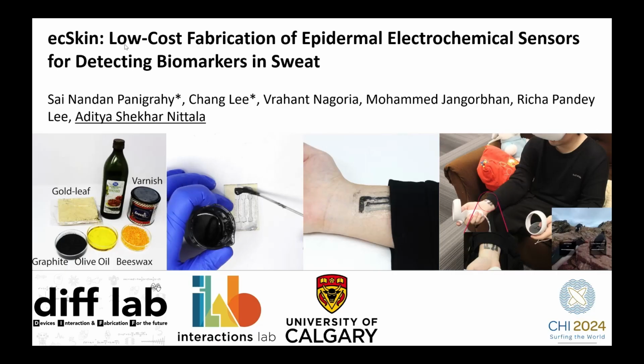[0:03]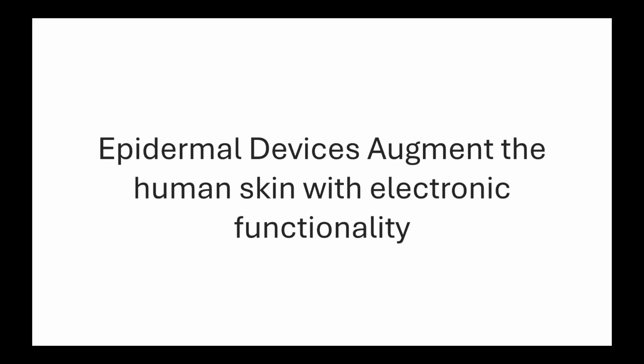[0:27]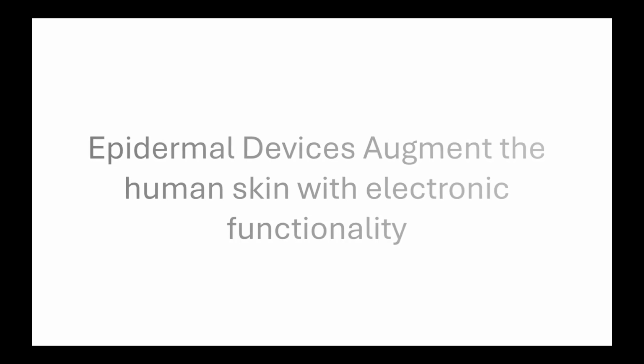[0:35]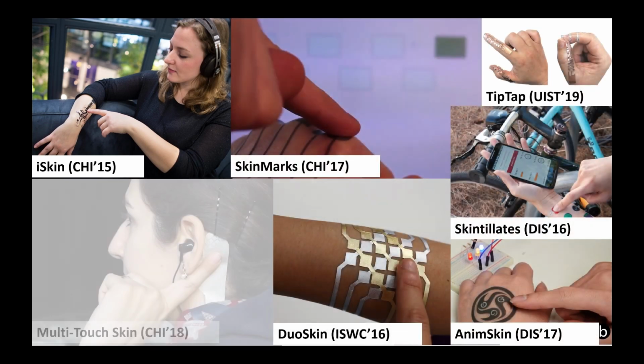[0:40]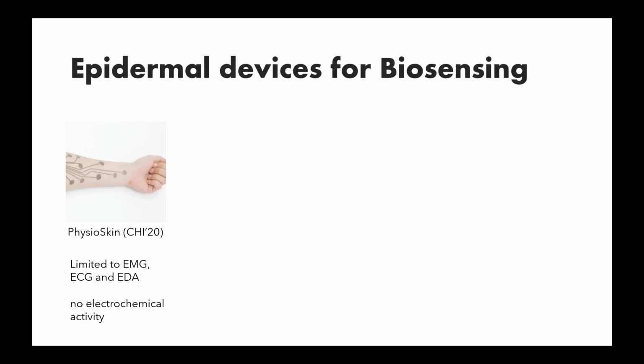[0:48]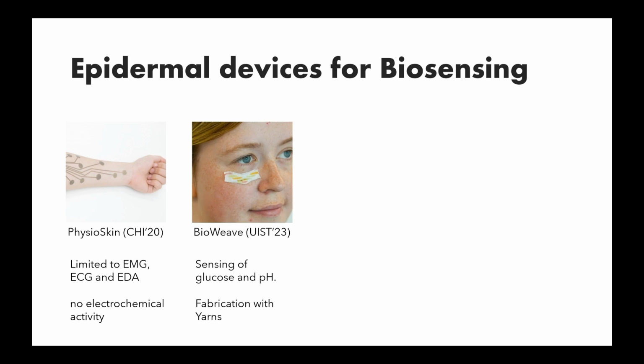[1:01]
Epidermal devices, often referred to as electronic skin or epidermal electronic systems, open up a wide range of possibilities by augmenting the human skin with electronic functionality. Recent research in HCI has explored the design and development of epidermal devices for sensing tactile input, delivering haptic input, and augmenting the body with visual displays. More recently, the HCI community has contributed to epidermal devices that can capture physiological signals from the human body. Capturing these signals offers several benefits in terms of non-invasive health monitoring.
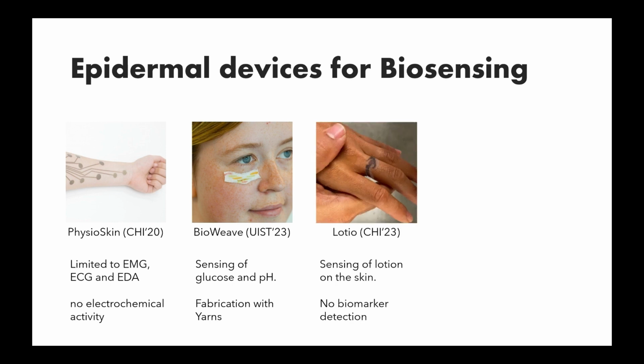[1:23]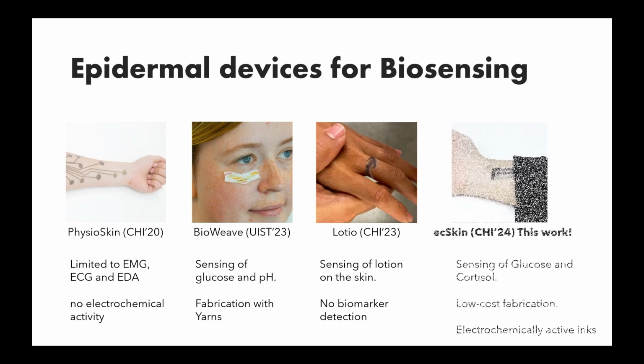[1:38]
However, most of the work in human-computer interaction is limited to electrophysiological sensing and not electrochemical sensing. So beyond the digital sensing of human physiology, there are biochemical markers, which are molecules in human fluids, which can reveal insights into human health at the molecular level, which can be used for personalized medicine. The use of chemical processes for designing novel interactions is gaining recent attention in human-computer interaction. These include supercapacitors that are fabricated using sustainable materials and wearable patches that can show exposure to UV light through changes in color. Despite this, we are yet to see the fabrication of electrochemical epidermal devices created from off-the-shelf materials that can react with human sweat and detect biomarkers non-invasively.
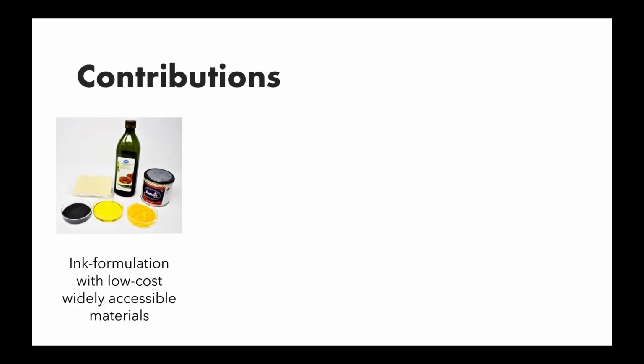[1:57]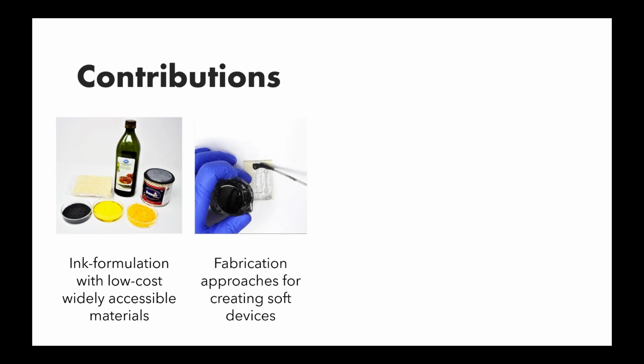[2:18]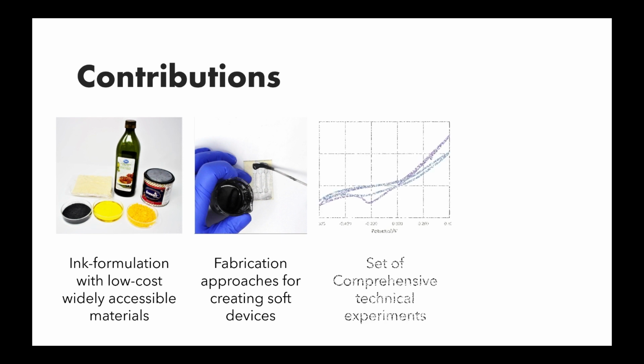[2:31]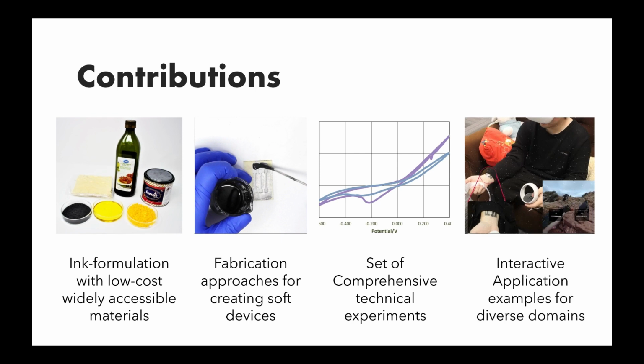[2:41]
So what are our contributions in this direction? With commercially sourced off-the-shelf available materials, we present the synthesis of inks that are not only highly electrically conductive, but also electrochemically active. The inks formulated through our process outperform commercially available carbon-based inks, and the state-of-the-art conductive pastes contributed in previous HCI literature. We also present fabrication strategies for realizing these electrochemical sensors on multiple substrate materials. These techniques are also low cost and can be easily deployed in a makerspace setting. Next, we comprehensively evaluated our sensors through a series of technical experiments to measure electrochemical capability and electrical conductivity. Finally, we demonstrate application scenarios to showcase the potential of ecSkin for various interactive applications.
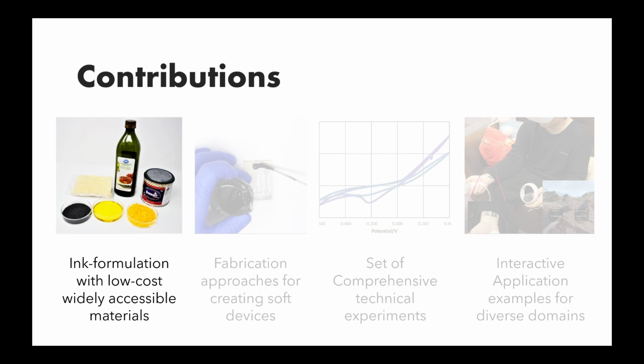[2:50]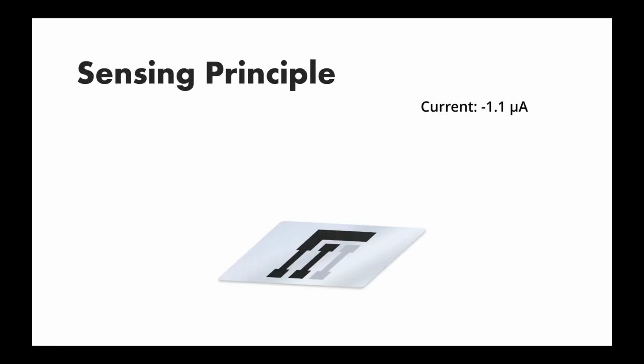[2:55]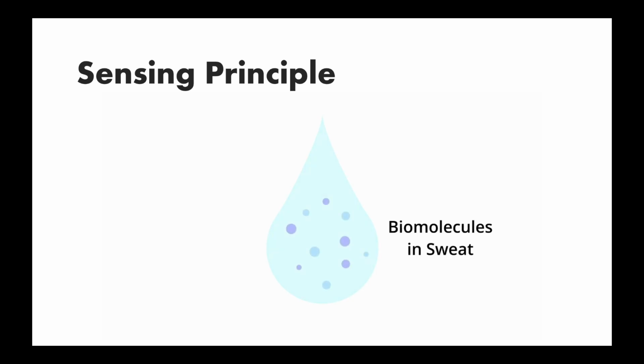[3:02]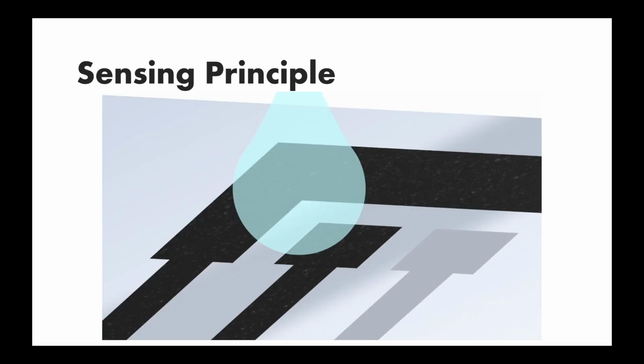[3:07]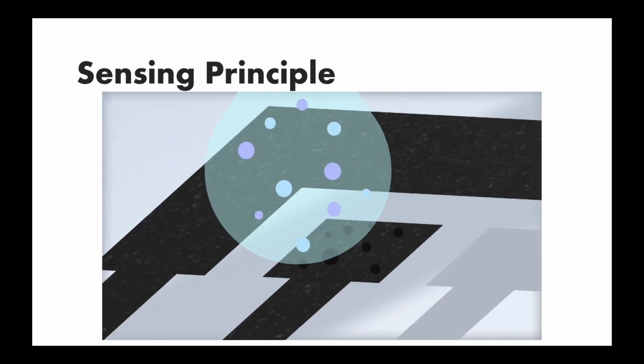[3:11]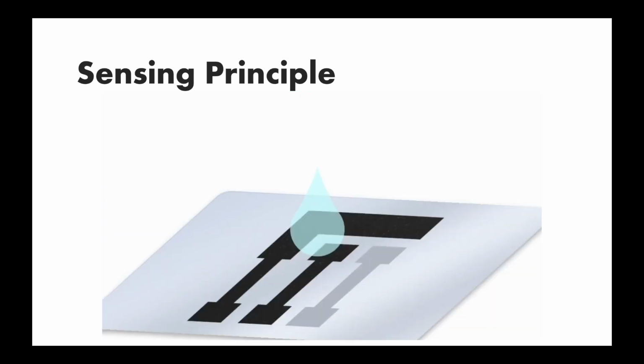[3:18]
So firstly, let us try to understand how the inks were made. And for that, it is crucial that we understand the sensing principle. When an analyte molecule, or a biomarker in our case, lands on the surface of a working electrode, it reacts with the electrode material, which results in the electron transfer between the two. This is often referred to as a redox reaction. The prime purpose of this working electrode is to convert this chemical reaction into a current signal by capturing the released electrons.
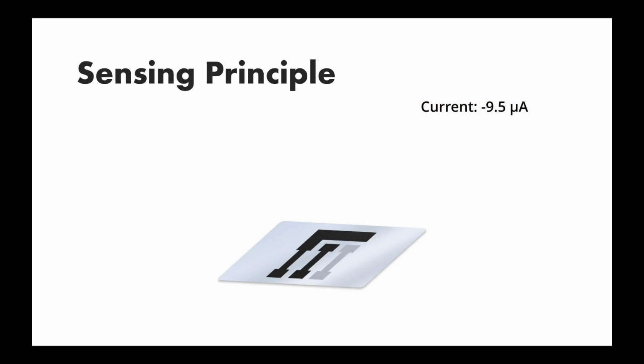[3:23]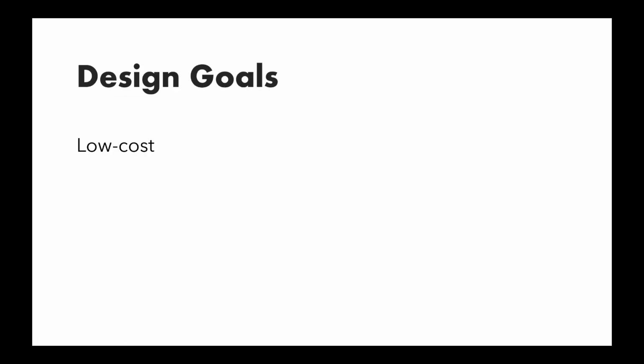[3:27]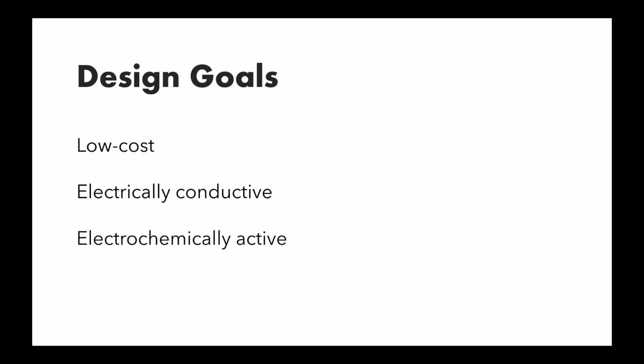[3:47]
Now, coming to the design goals of our sensor, firstly, of course, we wanted it to be low cost, hence making it accessible. Secondly, the sensors and the ink had to be electrically conductive so that the signal of a redox reaction can be captured accurately. Thirdly, the ink would have to be electrochemically active to interact with biomolecules present in our sweat. And lastly, it would have to be soft and biocompatible so that it could sit on our skin.
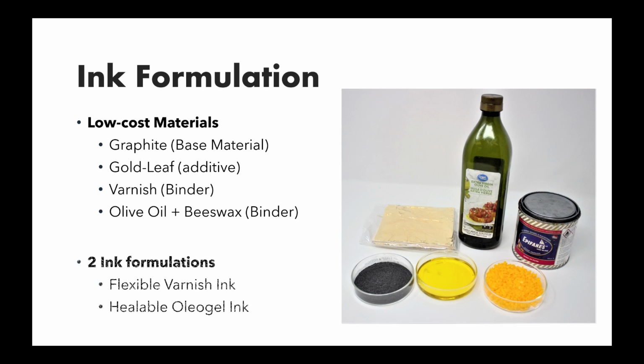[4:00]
Now, coming to the ink formulation, we focused on four low-cost materials primarily. So for our base material or conductor, we used graphite. We used gold leaf as an additive, which helped enhance conductivity further. Now, to bind these materials, we had two choices. First was a varnish, which contains alkyd resins. And the second option was olive oil and beeswax, which created an oleogel together. Hence, keeping this in mind, we had two ink formulations possible. One, which led to a flexible varnish ink, and the second, which led to the healable oleogel ink.
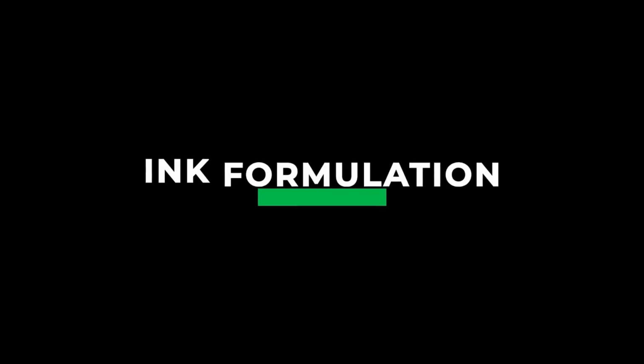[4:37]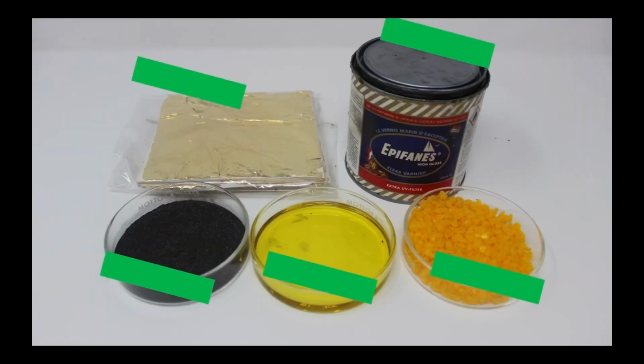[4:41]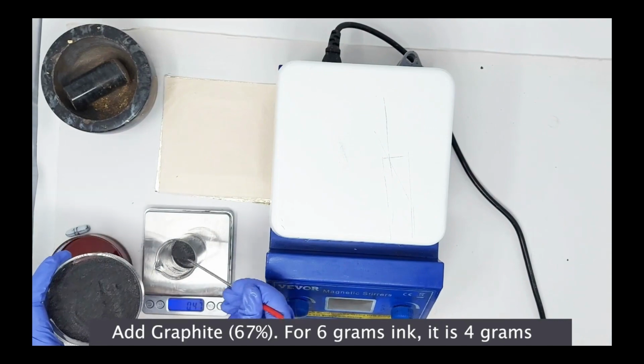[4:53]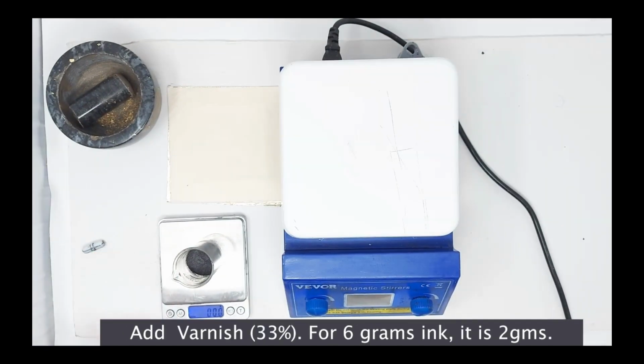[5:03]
Now, looking at the ink formulation of the flexible varnish ink, firstly, we have all our ingredients, as mentioned previously. Now, we start off by adding our graphite. If we want to form 6 grams of ink, we take 2/3 of the weight to be graphite, which means we take 4 grams of graphite. Further, we add a varnish, which forms 33% of the mixture. So again, since we aim to make 6 grams of ink, we add 2 grams of varnish to the previously added graphite.
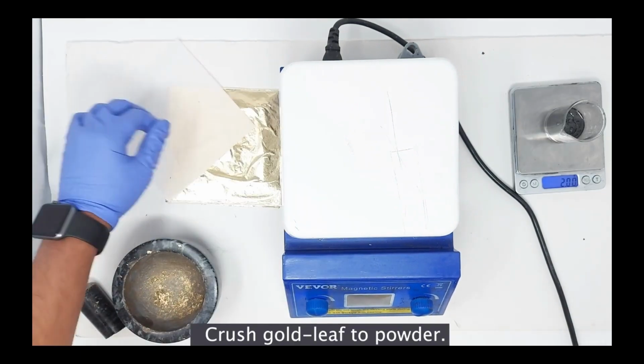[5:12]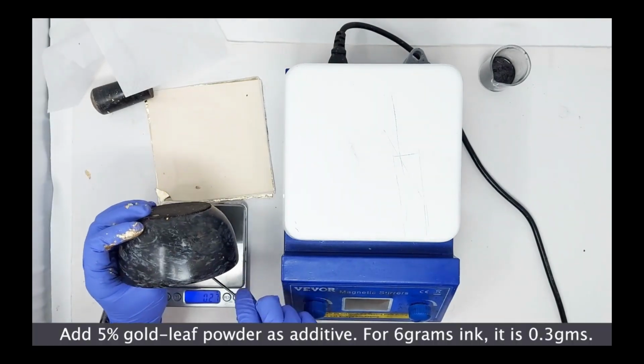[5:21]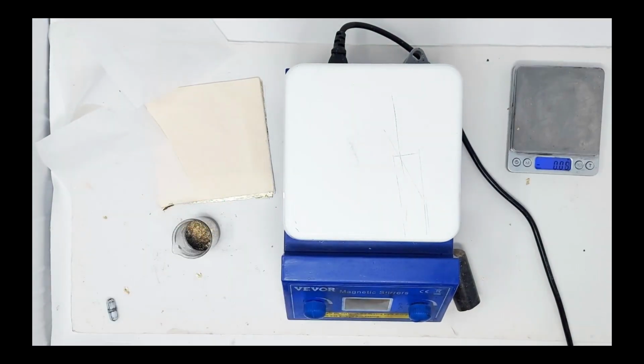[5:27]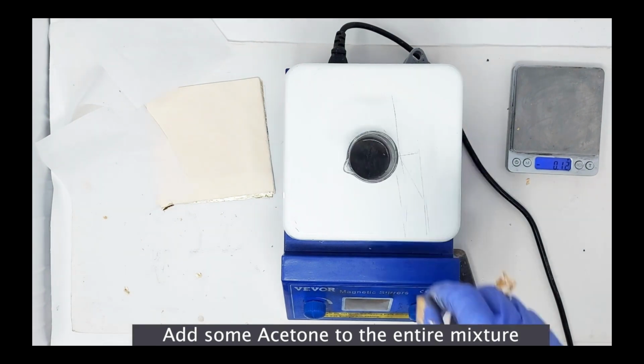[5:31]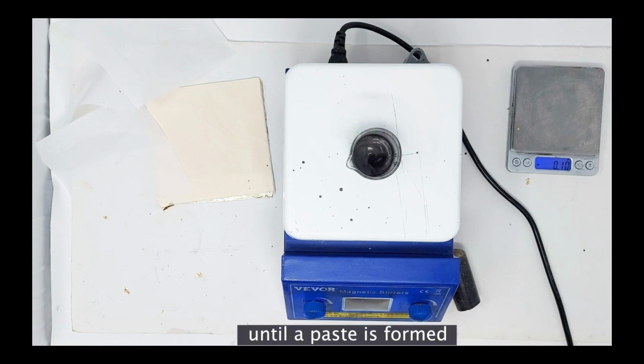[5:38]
Now, for our additive, we crush our gold leaf to form a fine powder using a mortar and pestle. We weigh this and we add about 0.3 grams of gold leaf to our 6 grams of base ink. Now, to form a homogeneous mixture, we add some acetone to the entire mixture and stir it on a hot plate at 85 degrees for about 12 to 15 minutes. We do this until a paste is formed, and thus we form our varnish ink.
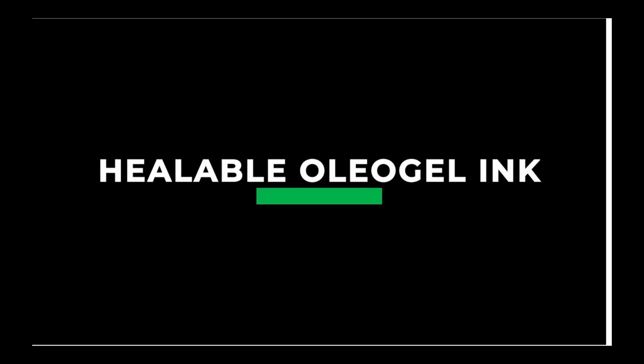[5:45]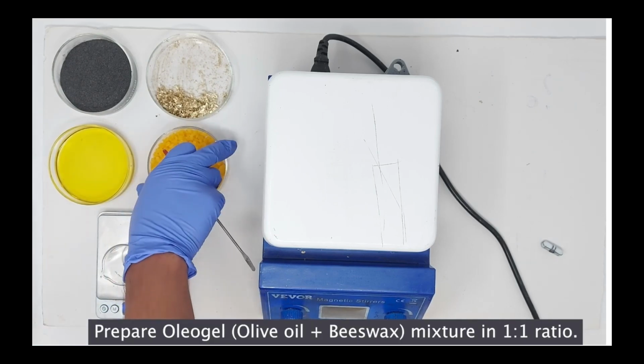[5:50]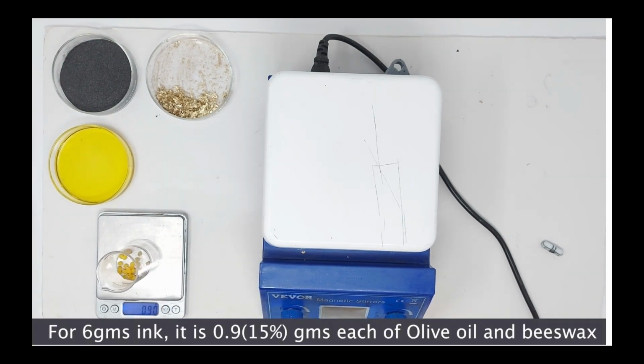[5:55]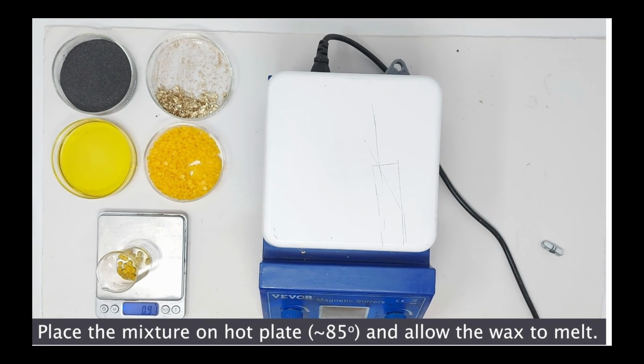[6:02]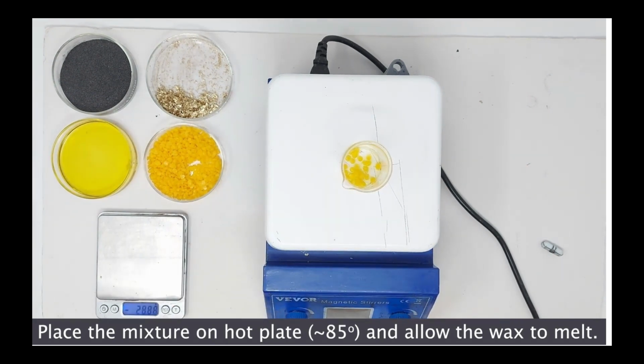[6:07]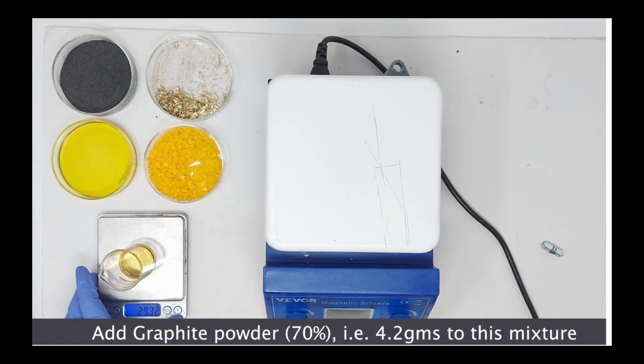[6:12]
Now, we come to the formulation of our healable oleogel ink. So, firstly, we prepare an oleogel, which is a mix of olive oil and beeswax in equal ratios. So, for 6 grams of ink, we take 0.9 grams of each, and we mix that on a hot plate so that the beeswax and the olive oil mix homogeneously. Now, to this, we add graphite powder, about 4.2 grams, to this mixture. Since we're forming 6 grams of ink, that forms 70% of the mixture.
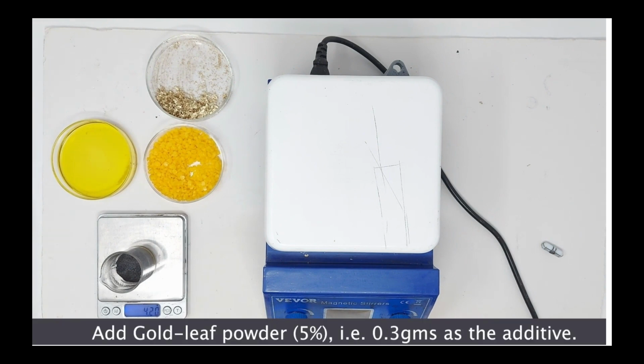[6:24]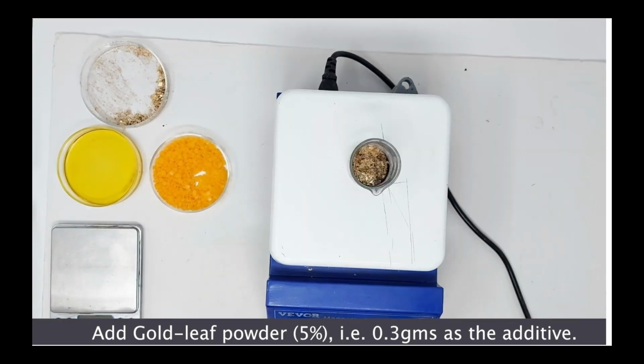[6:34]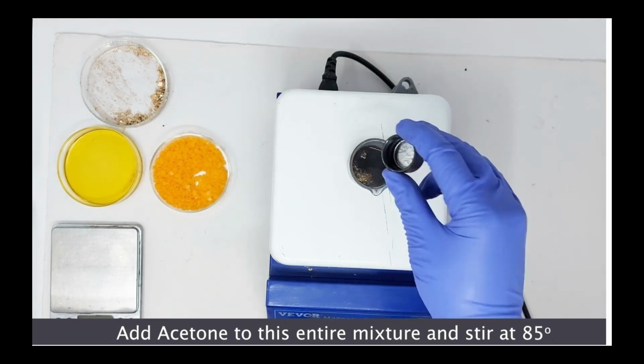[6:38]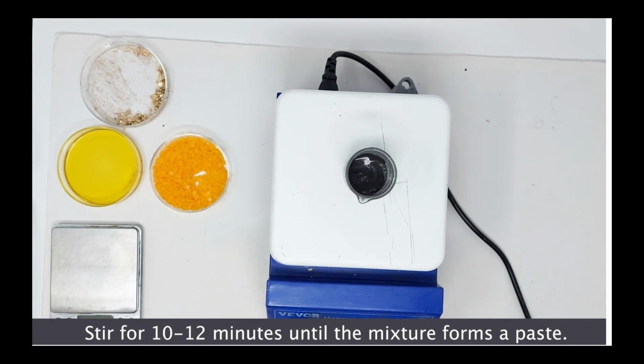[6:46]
Next, we add gold leaf, about 0.3 grams, as an additive, which is purely done to increase the conductivity. So this is added. And finally, we put this on the hot plate and again add acetone to form a homogeneous mixture, and stir this entire mixture at 85. Any excess acetone will be evaporated, so that is not to worry about. And we do this until we get a thick paste, a thick oleogel ink paste.
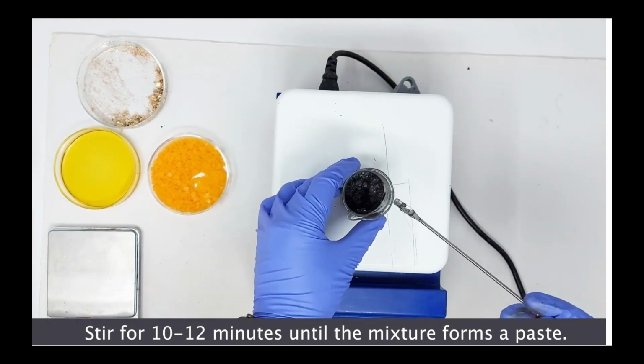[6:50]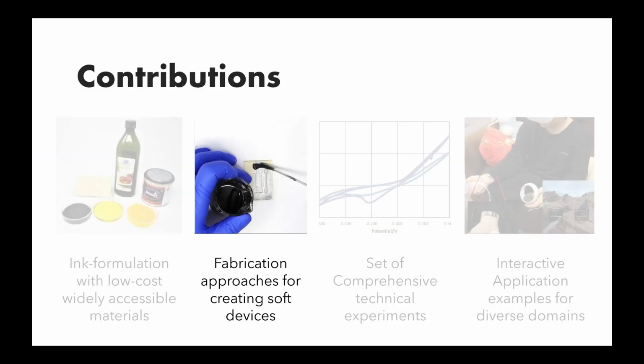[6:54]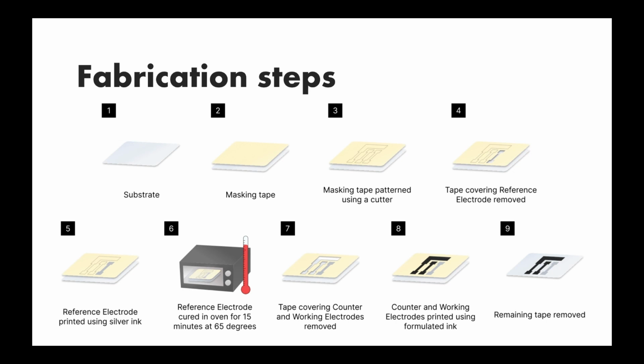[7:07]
So now, coming to the fabrication approaches for creating these soft devices. We were able to do this without using any sophisticated infrastructure, and hence we present to you a new approach. So these were the fabrication steps. Firstly, we would use a substrate. We use 3 kinds of substrate: a PET sheet, an EcoFlex or silicon sheet, and tattoo paper.
Irrespective of what substrate was used, first the substrate would be masked using a tape. Now, this mask tape would be cut using a cutter. A laser cutter can be used or a craft cutter can be used. Now, the tape covering the reference electrode must be removed first, and in its place, we apply a silver ink. Now, the reference electrode is cured in the oven for about 15 minutes at 65 to 70 degrees.
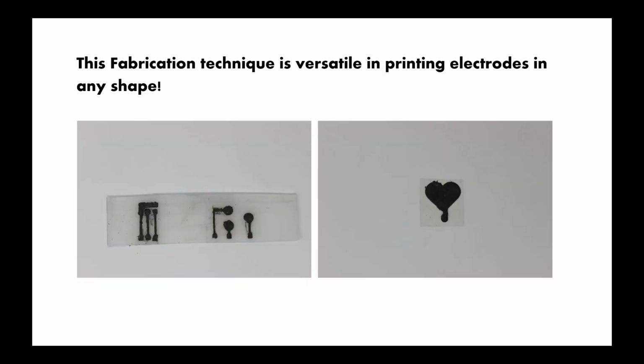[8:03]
After the silver is completely cured, the tape covering the other two electrodes is removed. And now we print these two electrodes using a formulated ink. And now the remaining tape is removed. And with this, we have our electrode setup ready. So using this fabrication technique, any shape of electrode can be printed. And hence, we believe this technique is very, very versatile.
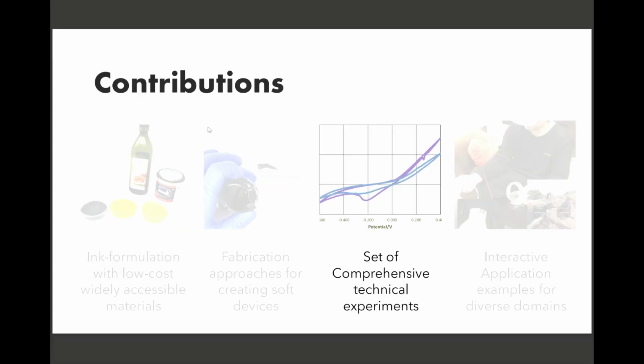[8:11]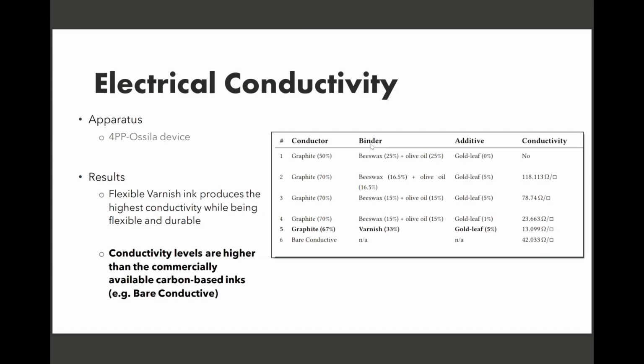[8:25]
Hello, everyone. My name is Vrahant Nagoria, and I'm here to present the technical part of our experiments. The first experiment that we perform is an electrical characterization to check the electrical conductivity of our sensors. The apparatus that we used here is a 4-point probe device, which is used to evaluate the resistance of electrodes made from different conductive composition inks. This setup reduces the impact of contact resistance, which leads to a more precise determination of electrode resistance.
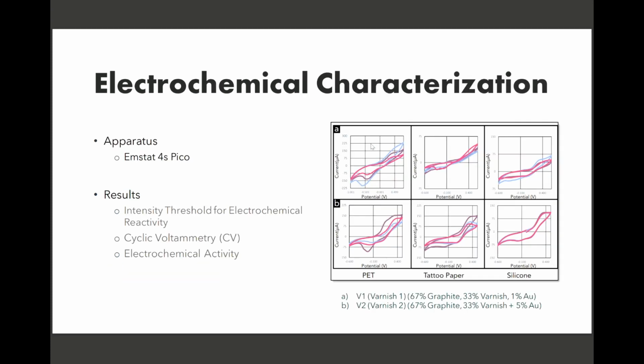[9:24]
The second experiment that we perform is an electrochemical characterization. To understand the electrochemical reactivity of our ink, we perform cyclic voltammetry tests, where cyclic voltammetry is a popular electrochemical technique commonly used to investigate the reduction and oxidation process of molecular species. The apparatus that we use in these experiments is standard, an EmStat4s Pico, used in previous physical sciences research, because it provides us with a good understanding of the ecSkin sensor with respect to other electrochemical sensors that have been developed by physical and chemical sciences.
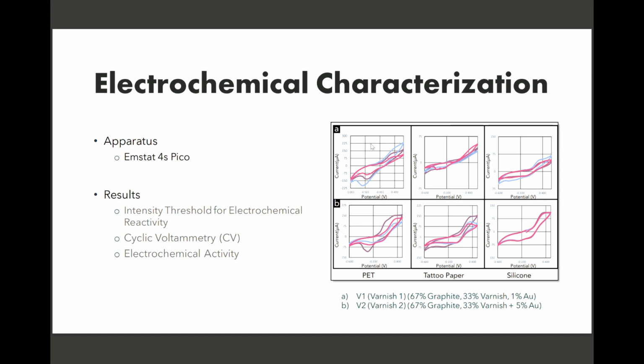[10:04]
The results for the electrochemical experiments on multiple substrate types and ink formulations are shown here, where this figure shows the overall results for all the inks and substrates averaged over the scan rates. The results show that all the ink combinations are electrochemically active on all the substrates. The performance of varnish-based ink with 5% additive shows a superior conductivity compared to all other inks combined across all the substrates. And hence, we use this ink for fabricating the ecSkin sensor and for the rest of the experiments.
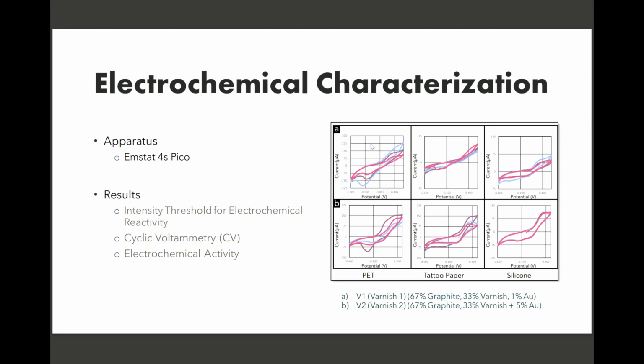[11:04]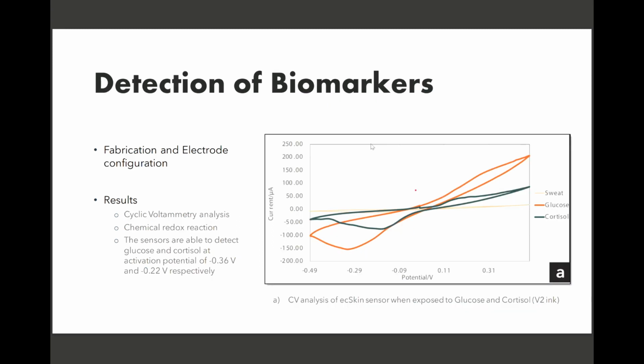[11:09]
The next experiment that we performed is a detection of biomarkers, in which we previously focused on understanding the electrochemical activity of our formulated ink in the presence of an electrochemical probe. In this experiment, we focused on evaluating the sensor response to various biomarkers in sweat, where, as shown in the figure, we can see a clear distinction in the voltammetric response of both glucose and cortisol,
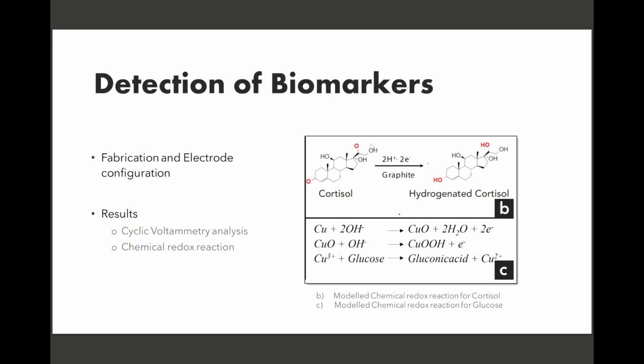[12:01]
where the cyclic voltammetry analysis of the sensor when exposed to glucose and cortisol is compared to the baseline sweat sample without these biomarkers. There is a clear difference in the peak activation potential for cortisol and glucose, at minus 0.22 volt and minus 0.36 volt respectively, where a chemical redox reaction for glucose and cortisol is modeled in this figure. We modeled the chemical reaction of cortisol based on prior work which used graphite for detecting cortisol in saliva.
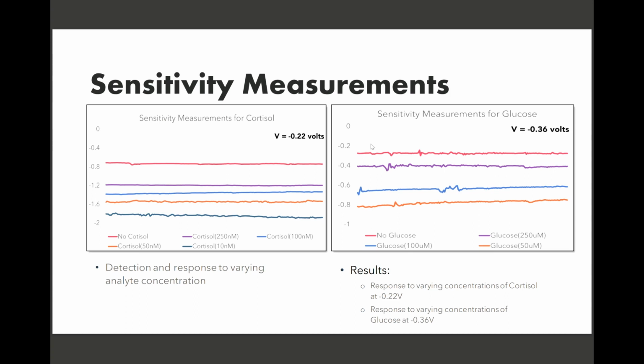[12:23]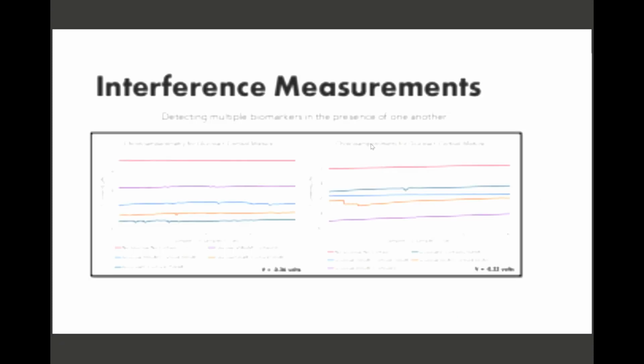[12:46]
For the other experiment, we measured the sensitivity of our sensor response. To determine the sensitivity, we exposed the sensor to varying concentrations of analyte and measured the corresponding changes in the sensor response. And we used chronoamperometry to evaluate the sensitivity of our ecSkin sensor, where in this figure, we show the current generated for the glucose and cortisol at their respective voltages.
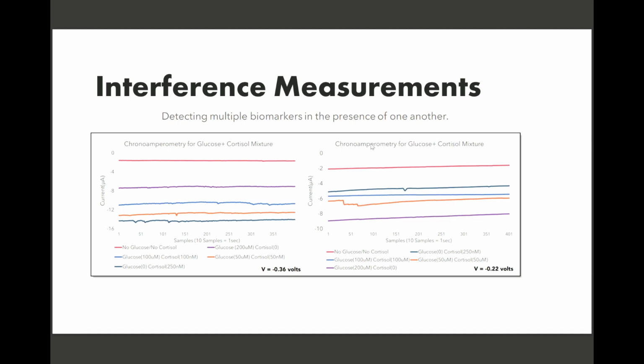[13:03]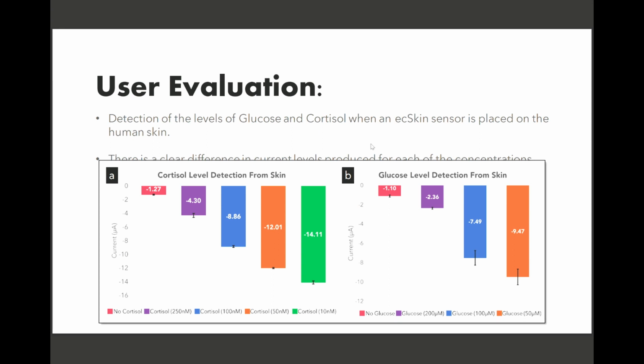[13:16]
It is noticeable that there is a clear distinction in the current generated for each of the concentration levels for both glucose and cortisol, and all of our samples exhibit similar behavior. Overall, the results suggest that the ecSkin sensor can reliably detect the entire range of glucose and cortisol levels present in the sweat. We demonstrated for the first time that the sensing of multiple biomarkers through a single non-enzymatic sensor is possible.